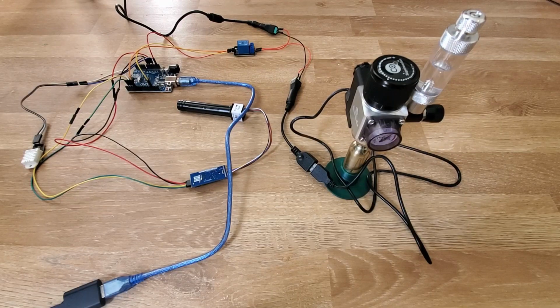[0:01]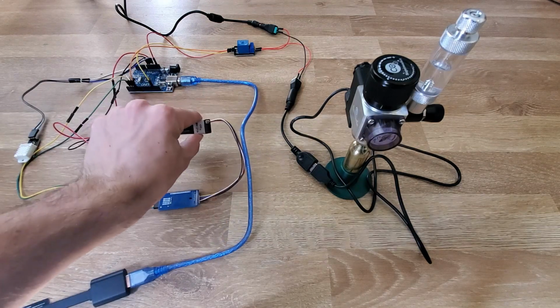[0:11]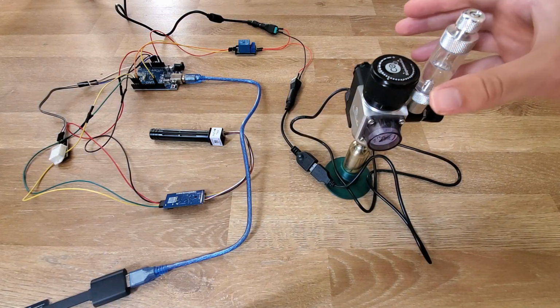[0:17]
Thank you, Commerce. I wanted to give you an update on the progress for my CO2 incubator. In my last update, I showed how to connect the CO2 sensor, temperature and humidity sensor. So what's new in this update is the actual CO2 regulation, which you see here, and
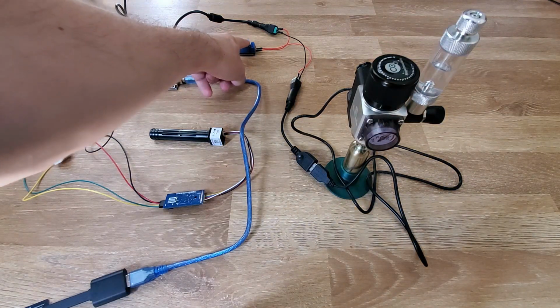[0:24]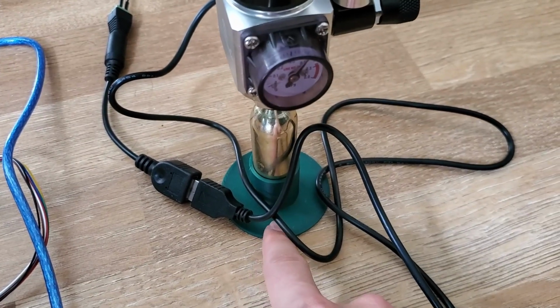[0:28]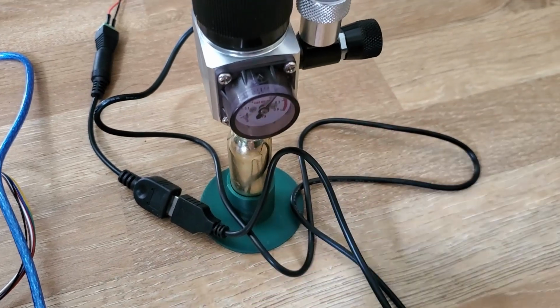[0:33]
which uses a relay back here. And just for convenience, I've 3D printed a little holder for the CO2 cartridge. That just allows everything to stand upright.
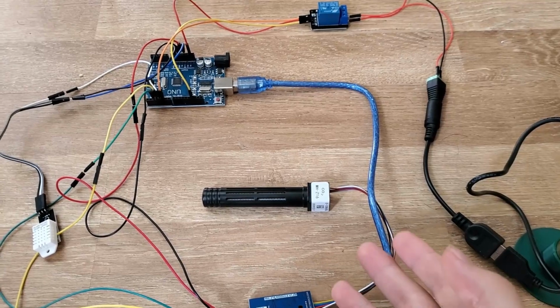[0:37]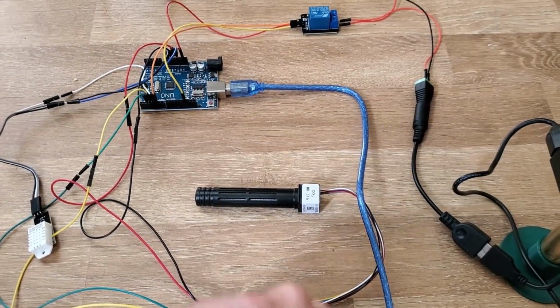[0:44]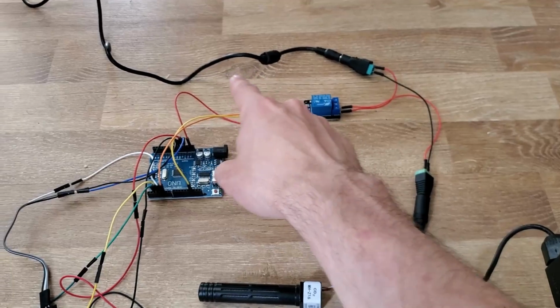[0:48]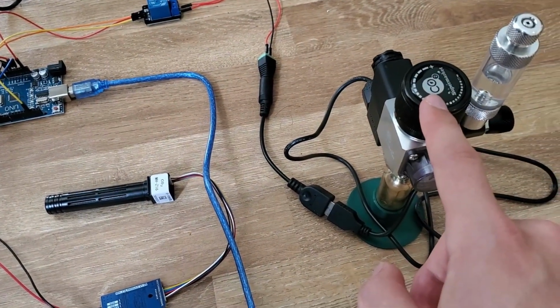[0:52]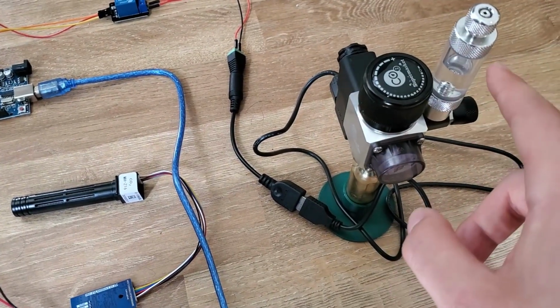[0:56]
The simple explanation for how this works is that when the CO2 sensor detects less than 5% CO2 in the environment, it will trigger this relay to open, which allows then this regulator to also open, and there's a solenoid here, and the CO2 can be released into the system.
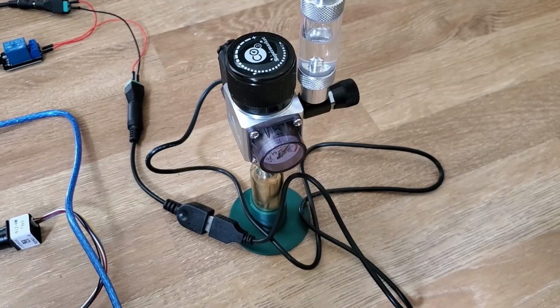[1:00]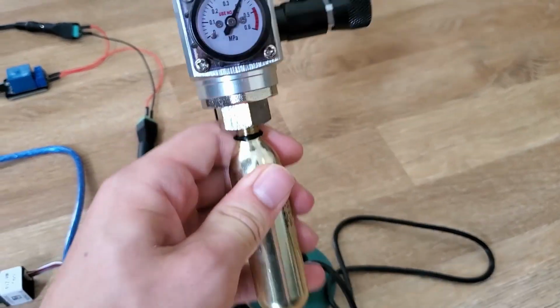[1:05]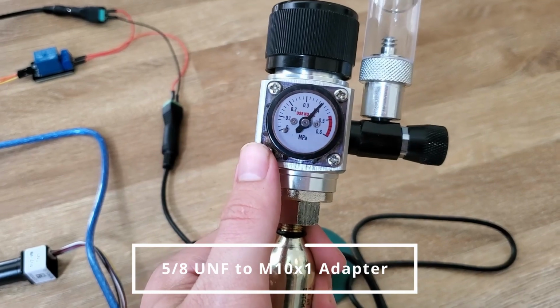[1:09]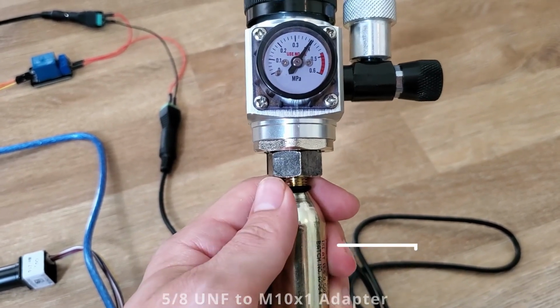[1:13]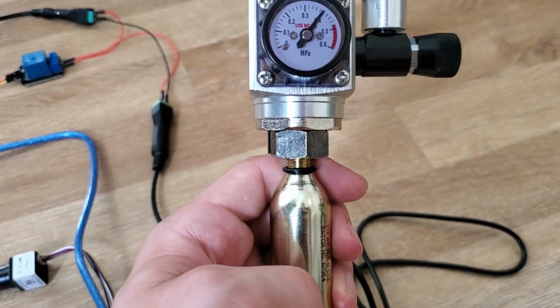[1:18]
The trickiest part of this whole design in some ways was actually just finding the correct adapter to go from this regulator to a 16-gram cartridge in this case, since I wanted very small cartridges just for testing the setup, and because it makes it ultra portable as well.
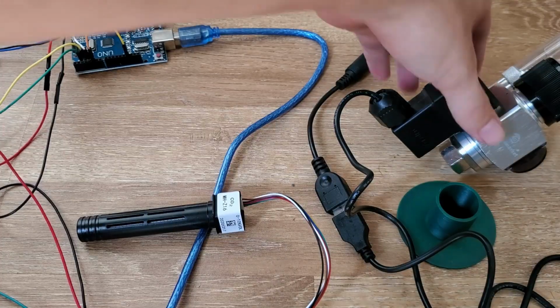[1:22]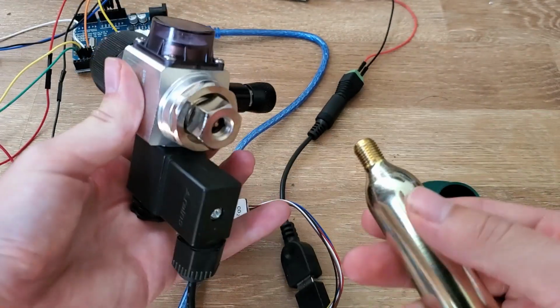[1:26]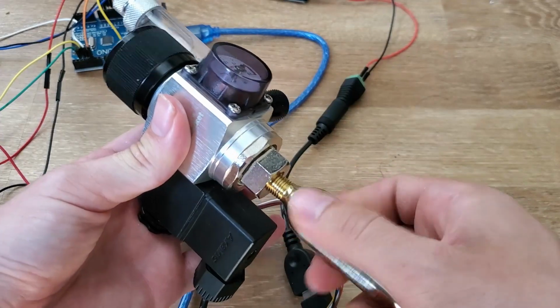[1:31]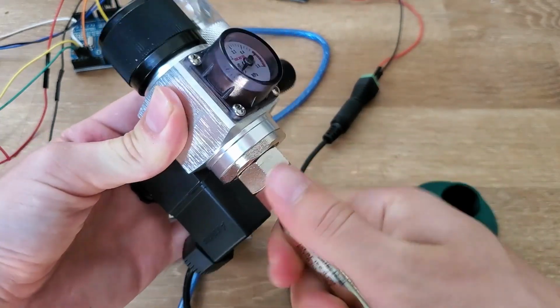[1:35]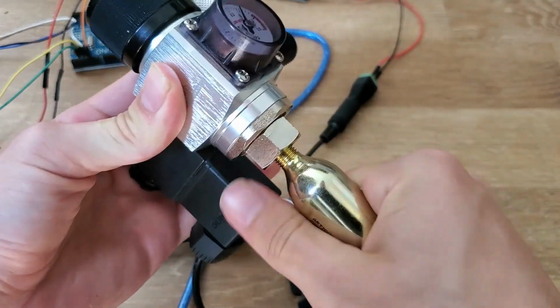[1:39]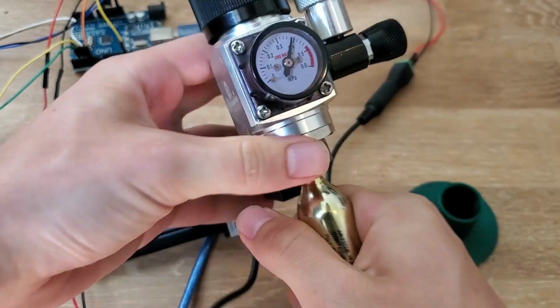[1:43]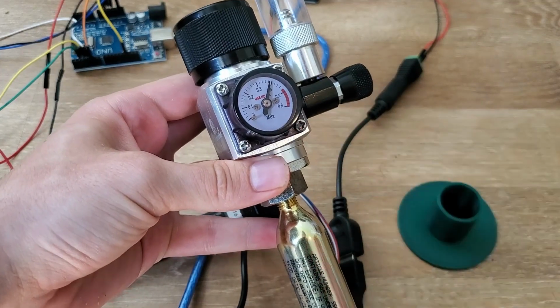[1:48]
Now, to load a new cylinder, basically just screw it in until the seal breaks. You can hear it leaking, and then you go quickly, as tight as possible. And you can see the pressure right here.
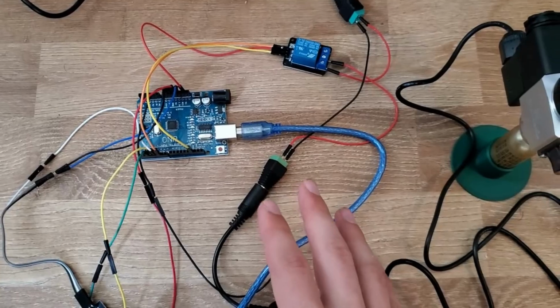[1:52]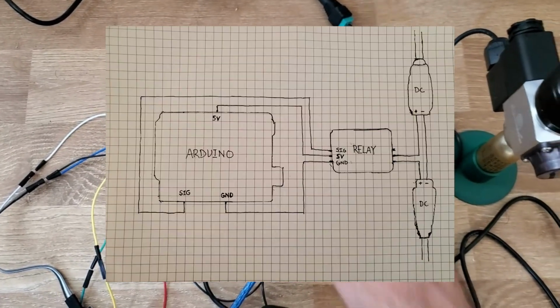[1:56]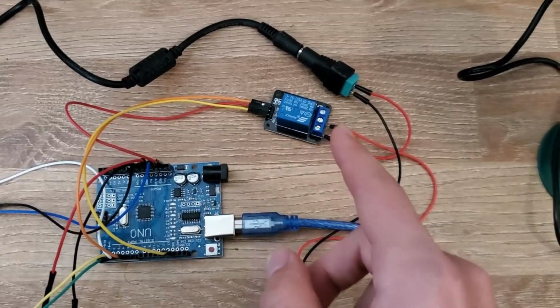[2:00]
As you can see, the wiring is starting to get a little bit messy here, but I'll show a schematic specifically for the relay and the regulator in this video. The wiring for the relay is actually quite simple. Coming in, you have 3 wires.
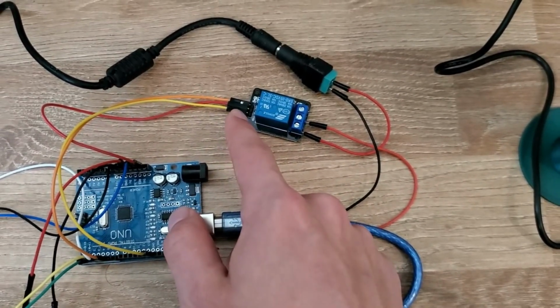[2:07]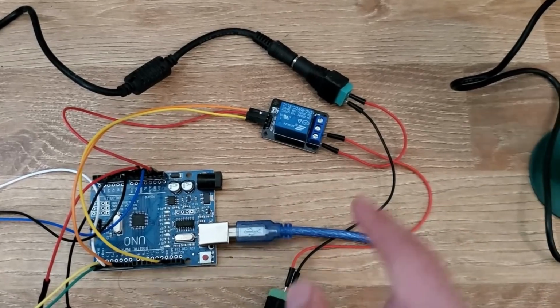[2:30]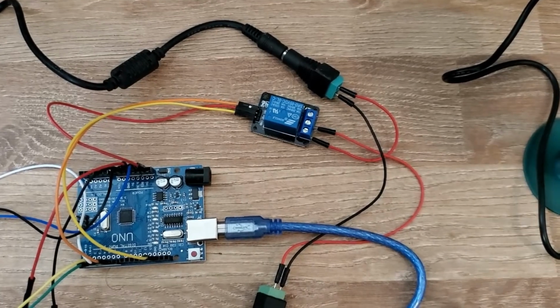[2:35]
The first is the ground wire, then the 5 volts, and then the signal pin, which if it's set to high, switches on the relay, and set to low, will switch it off. On the other side, you have the interrupted positive wire coming from the input power supply. You see here, continuing on. And then the ground bypasses the relay and goes directly from the input power to the regulator power supply.
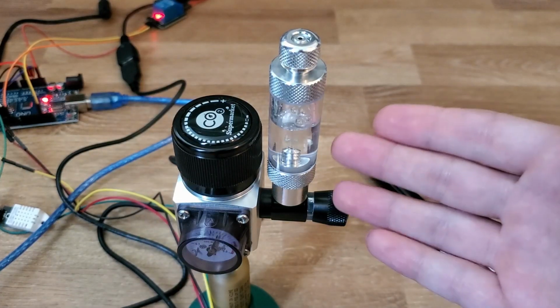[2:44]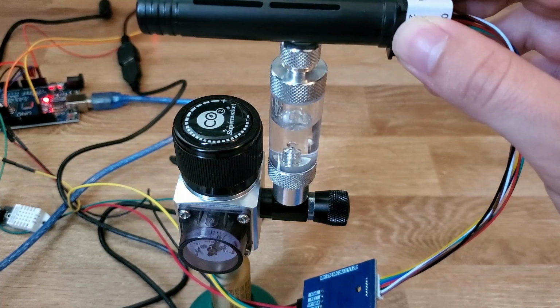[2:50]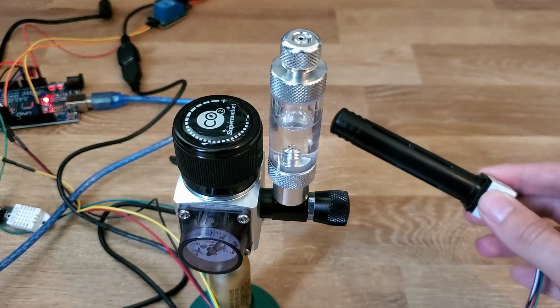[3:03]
So if everything is working correctly, as you can see, CO2 will bubble up through the regulator. And then if we take our sensor, place it above, once the sensor recognizes above 5% CO2, the regulator should switch off again, as you can see. Then if we take the CO2 sensor away, as soon as the CO2 levels drop below 5%, the regulator should switch on again.
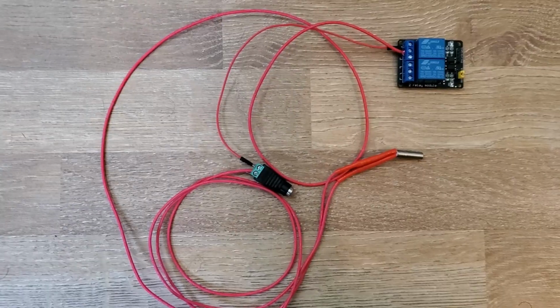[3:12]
The next step will be to add a second relay to allow temperature regulation via heater cartridge, but I still haven't gotten that system working yet, so that'll have to wait for another video.